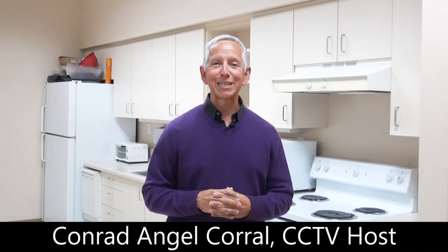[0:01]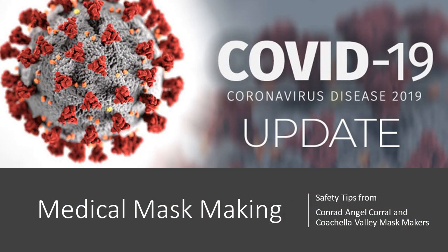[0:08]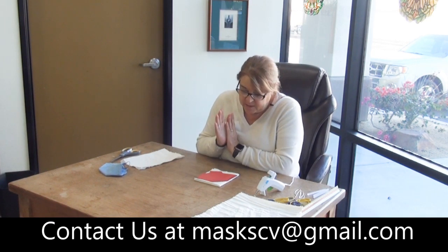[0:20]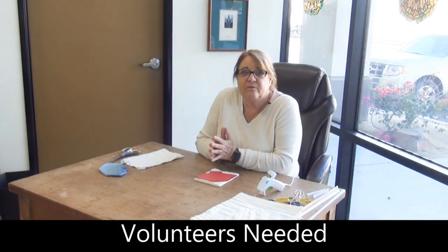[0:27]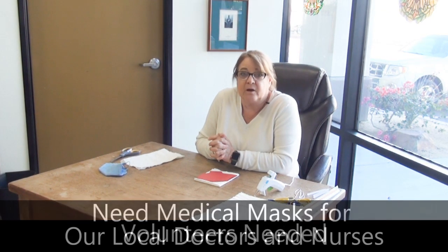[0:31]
Here is an informative video on how you can make a medical mask for our local doctors and nurses. Hi, my name is Shelley. I'm with the Coachella Valley Mask Makers. I am going to show you how to make a disposable medical mask in about 15 minutes. And then we will be looking for volunteers to help us make these from home. And these are for our frontline hospital staff.
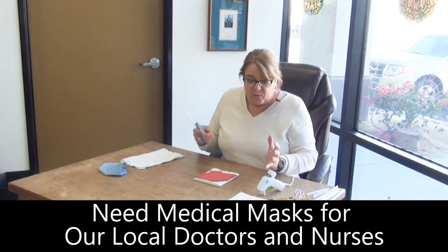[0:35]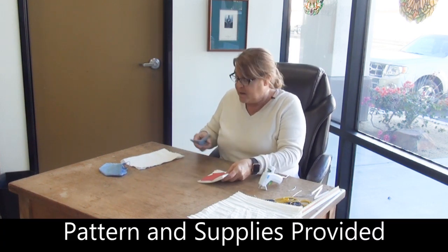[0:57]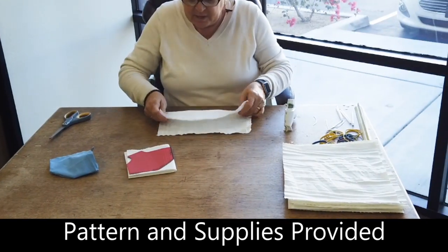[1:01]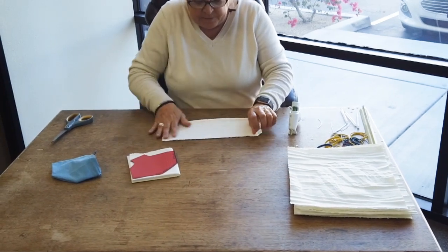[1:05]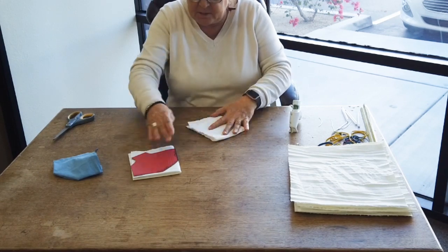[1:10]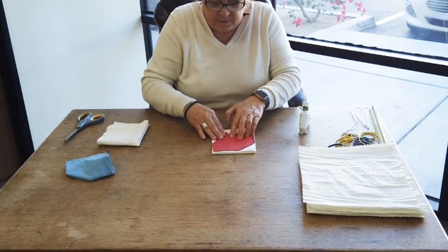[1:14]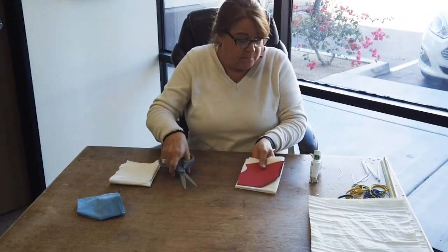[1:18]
So what you need to get started is a pair of scissors, a glue gun and glue sticks, rubber bands, a wire for the nose, and we are using these industrial towels. So a pattern as well. Here is the pattern. I have taken one of these industrial towels and I have folded it in fourths, making it 4-ply, and it's just enough fabric to stick this pattern on. We will supply the pattern as well.
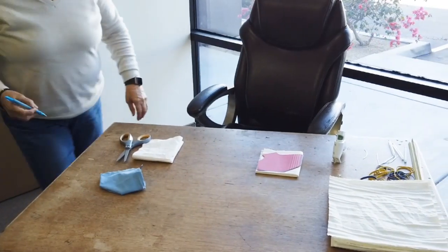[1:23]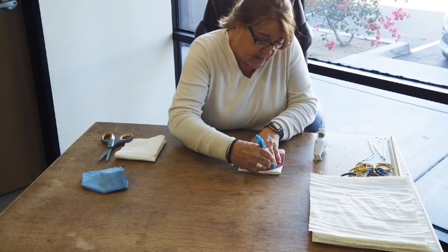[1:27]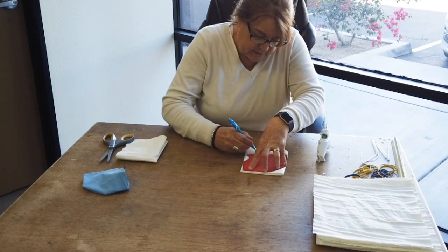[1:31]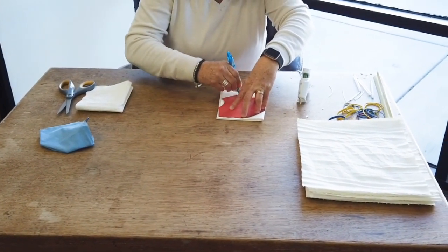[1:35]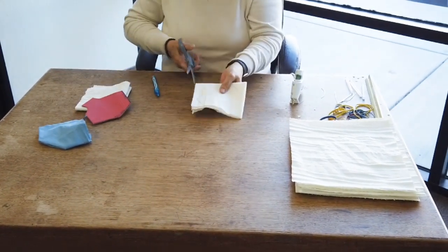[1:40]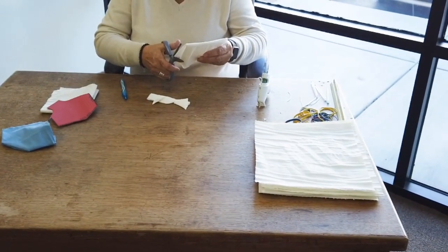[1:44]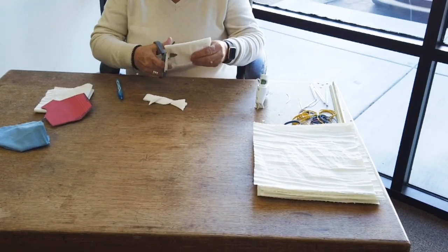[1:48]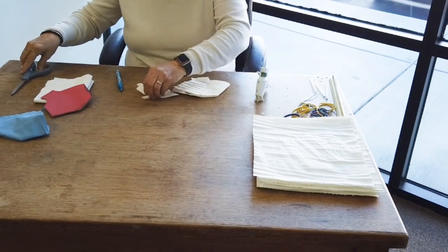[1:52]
So I can mark around, or my pen, mark around the pattern. It's easier to do it that way. And this is something that gets easier as you do it and quicker. I think it's something anyone can do. Great thing to get the kids involved in. Good community project, right? And art, craft, and community project.
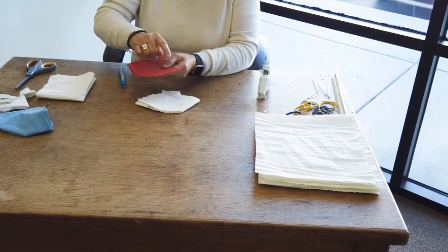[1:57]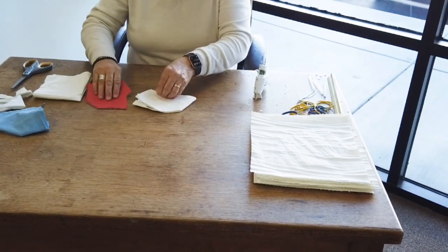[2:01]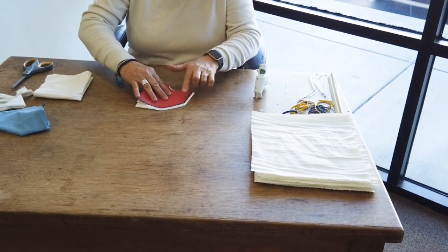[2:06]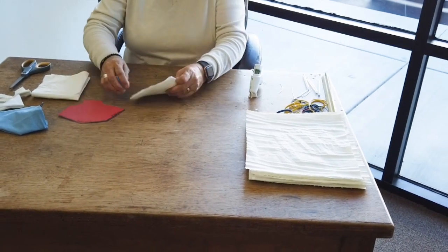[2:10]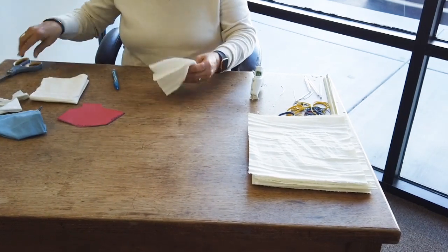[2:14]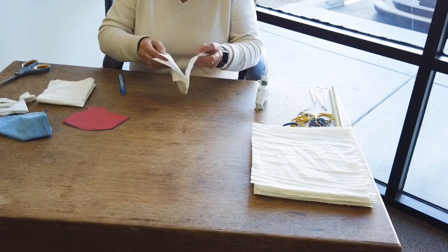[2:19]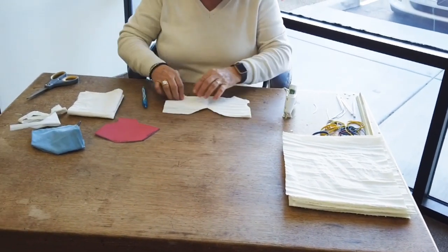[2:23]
One part I forgot to talk about here is on the pattern, there's a spot that says on fold. And what that means is like where the fabric was folded, that's where that has to go. All the rest is an open cut, but that one part is on the fold of the fabric. So now we've got the two pieces of the mask, one on top of the other. We open them up like this, one stacked on the other.
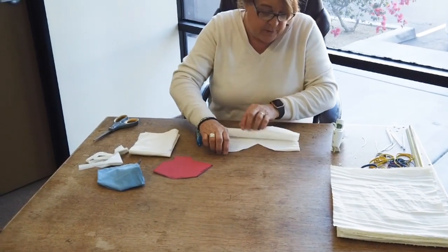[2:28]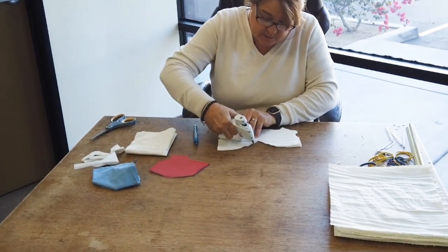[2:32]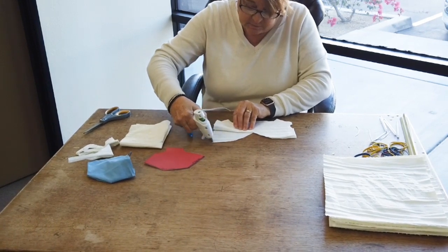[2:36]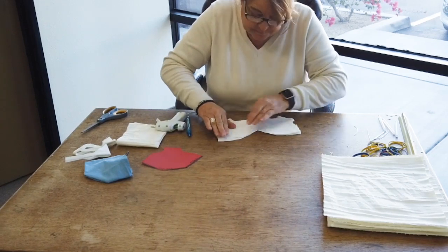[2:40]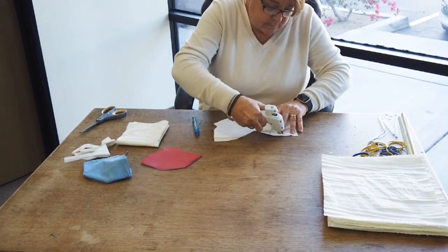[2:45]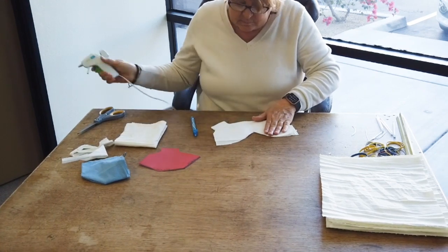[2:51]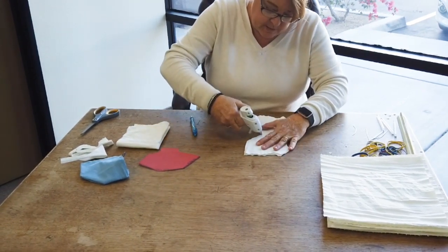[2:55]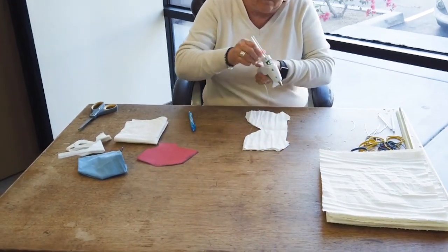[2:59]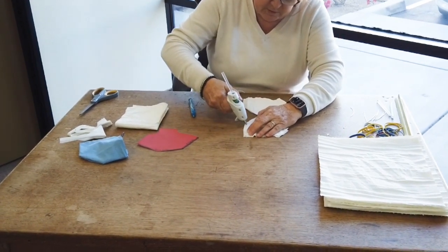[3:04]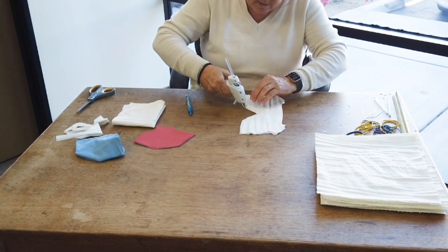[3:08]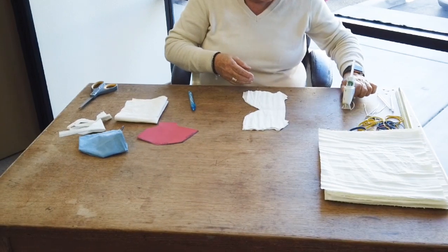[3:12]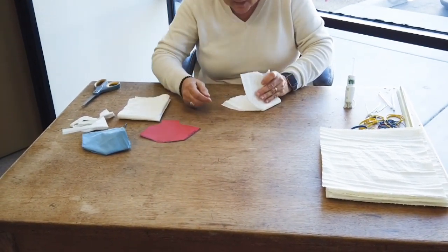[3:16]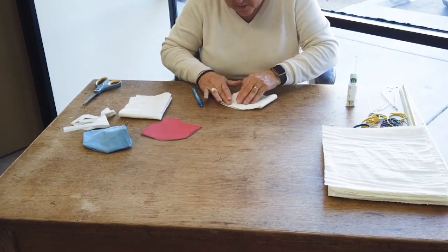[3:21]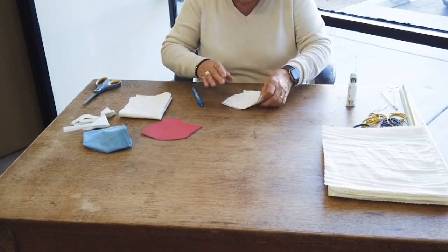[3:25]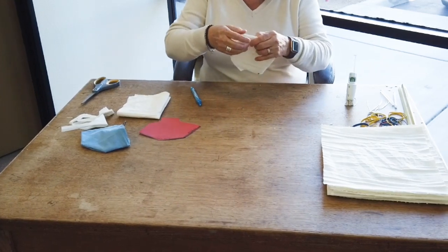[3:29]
We're gonna open it up and we're gonna give it a bead of glue just along the top here. Same thing on both sides. From there, we're going to give it another bead of glue on the outside. After we've glued those two pieces together on the inside, we'll hit the outside here. Fold it back over to how the pattern was cut. Line it up and have our seal. Just like that. I'll let that dry for a second.
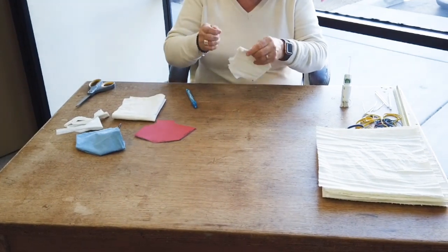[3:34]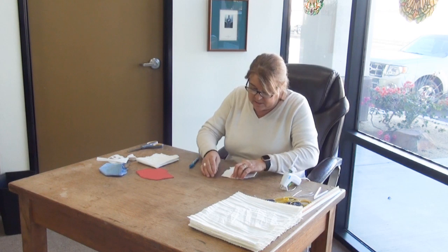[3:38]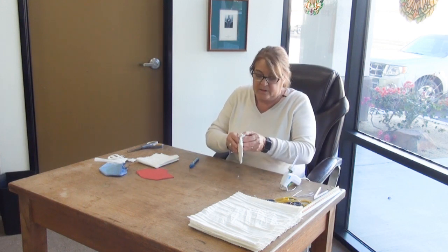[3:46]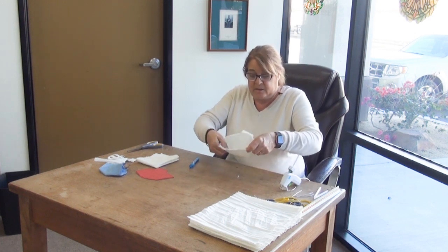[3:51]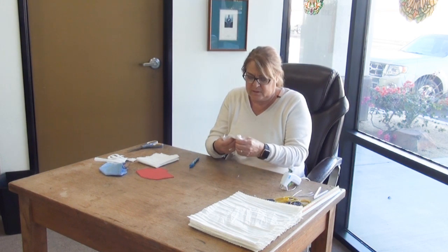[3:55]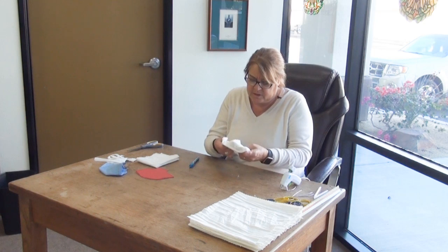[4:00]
Hot glue gets a little sticky. You try not to get too much on to be clumpy and messy. Again, that's an art you'll figure out after you do a few. So I'm going to take this now that we've got that, kind of let it dry for that little bit of time, and turn it inside out. Now, of course, we want clean, sanitized hands prior to starting our masks. We will sanitize them at the other end as well. Other end meaning when we drop them off.
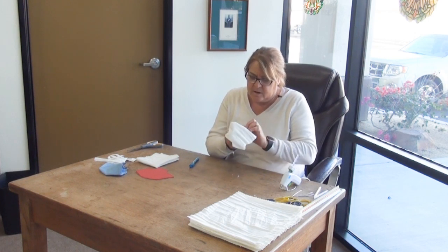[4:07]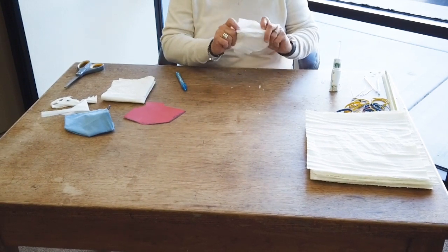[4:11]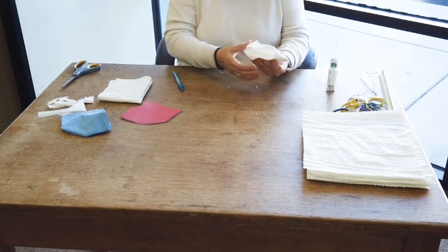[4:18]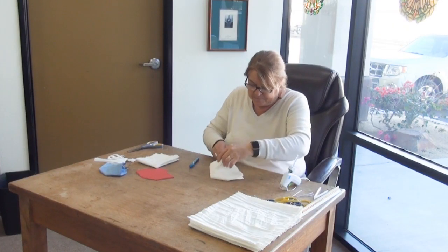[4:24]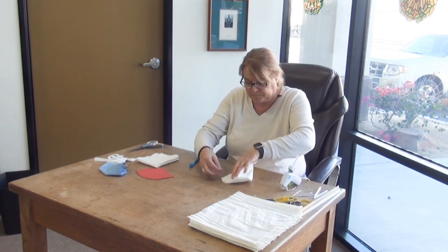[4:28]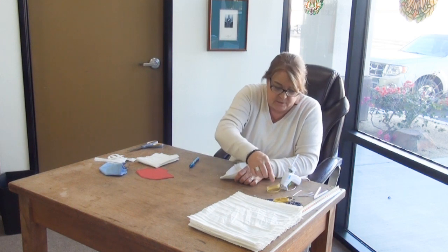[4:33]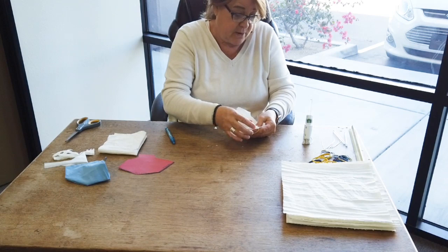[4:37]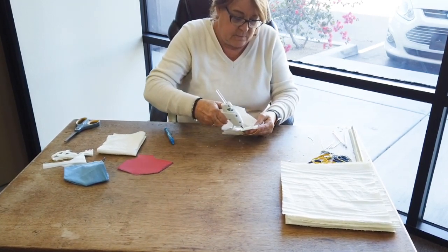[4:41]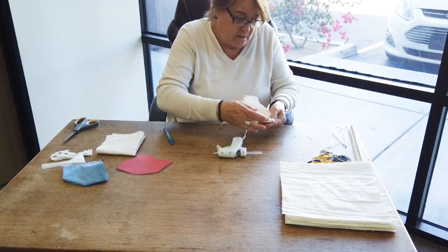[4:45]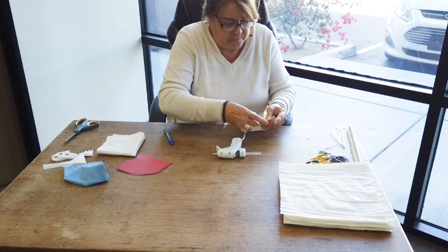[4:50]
Okay, so we press this out, and here's where you're going to press, and you're going to find out if you've got any broken seam. I've got a pretty good glue seam there. It's holding. So essentially, this is our mask. A few finishing touches. We're going to take some rubber bands and let's see, I want this one. And we're just going to slide it on that little tab right there. Give a good amount of glue. Flip that tab down. And since we doubled it, we need to do it again.
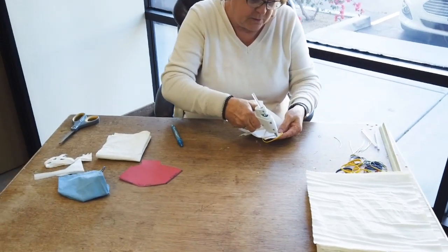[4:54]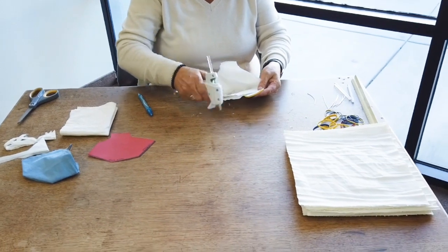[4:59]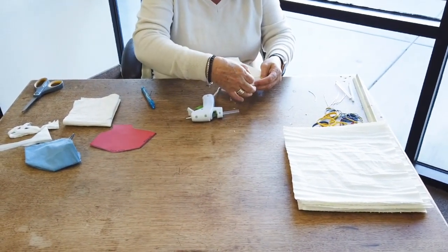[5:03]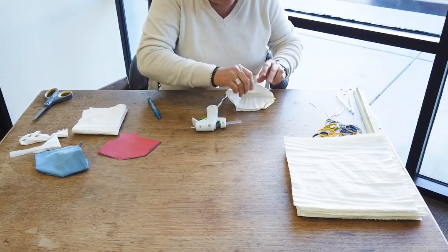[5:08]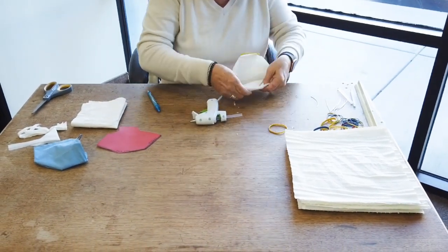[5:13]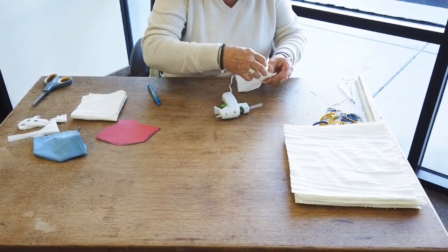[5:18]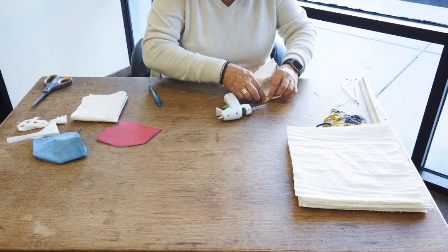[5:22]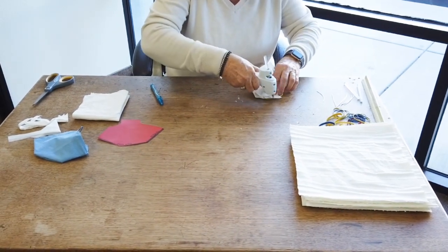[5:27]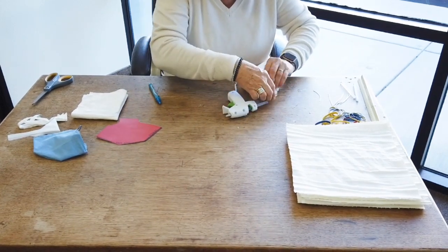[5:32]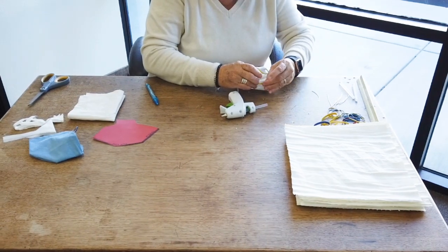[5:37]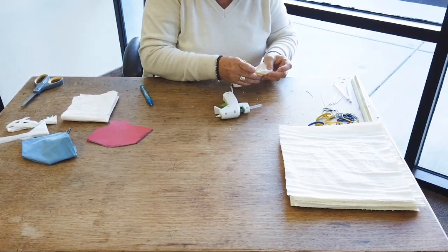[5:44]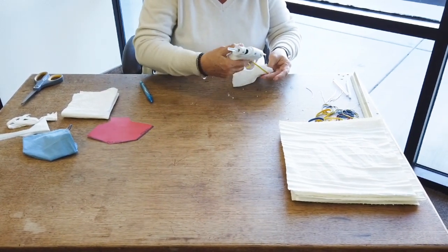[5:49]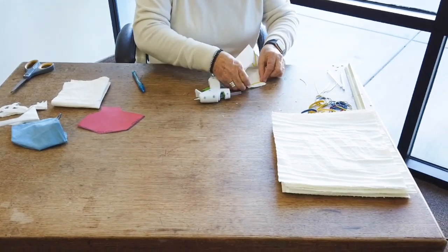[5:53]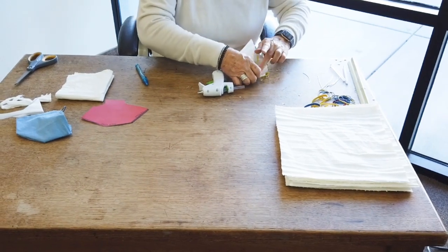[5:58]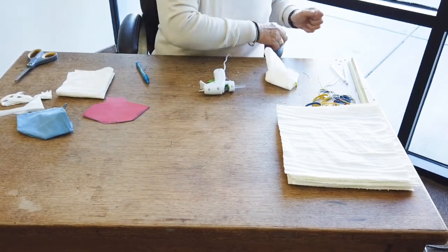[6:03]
We got one layer down. This part's important because this part's going to be resting on the ears and there's a little bit of tension on it. So we want to make sure that we got plenty of glue holding that strong. Press that down. Same thing on the other side. I always catch myself a little bit there. Same thing on the other side. Second earpiece. Did a little bit different this time. I glued those two together first. I'm going to come down with it again. Okay. Let that dry.
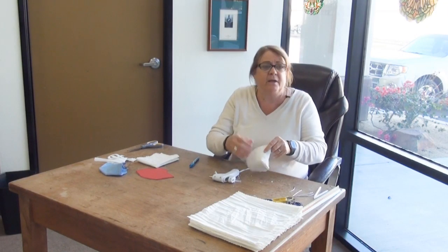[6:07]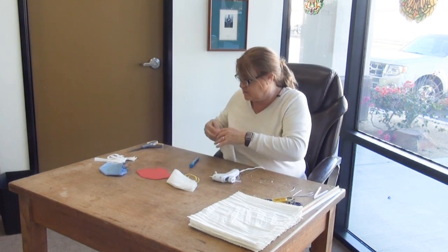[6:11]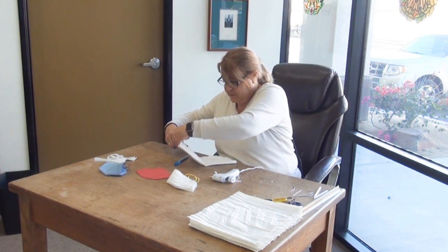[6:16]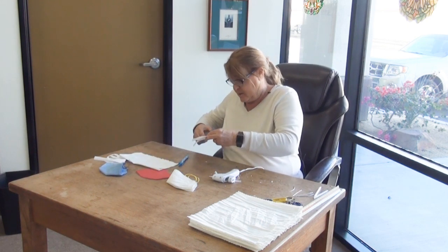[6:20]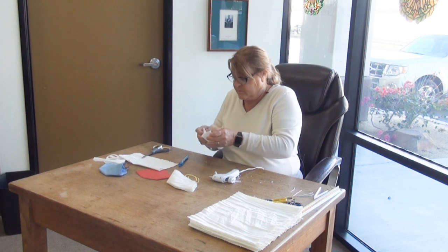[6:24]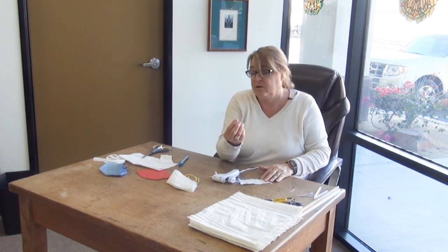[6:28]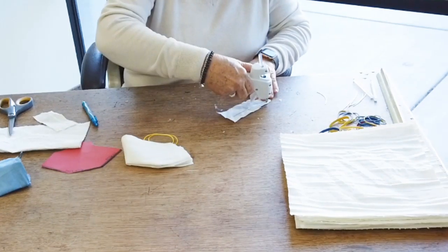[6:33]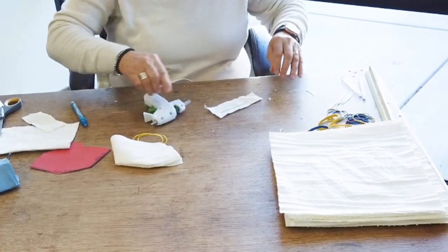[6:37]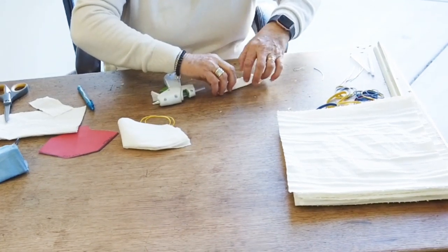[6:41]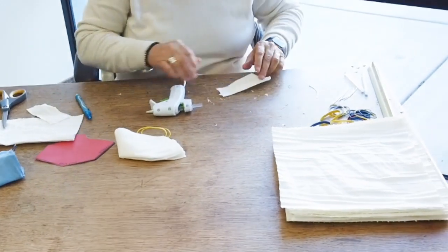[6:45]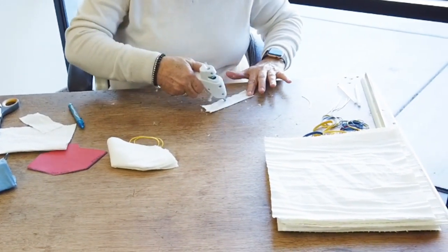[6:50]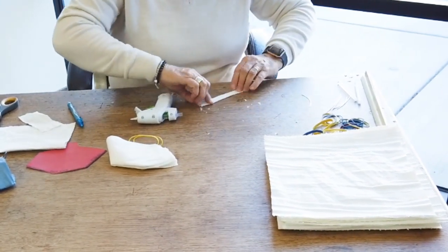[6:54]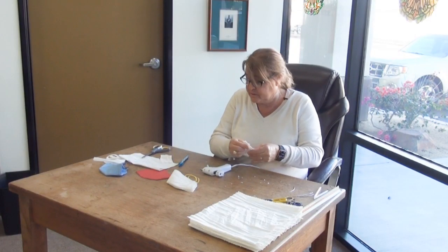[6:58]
And one final element we need to add is the wire that goes across the nose. This part takes the longest. Not difficult, but it takes a little bit more time than just folding it and tucking it in there, protecting that space. So I'm going to take a wire. This is just like a 20 gauge wire. I'm going to wrap it, like I want to get like 3 folds here in a piece of the industrial towel from the scrap. So if I can get 1 fold here, 1 fold there, and 1 fold here, presto. So just wrapped it 3 times in that.
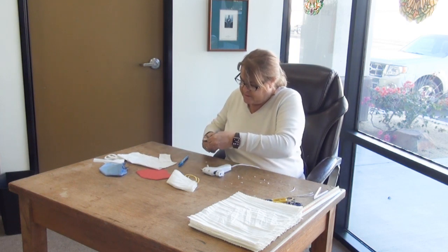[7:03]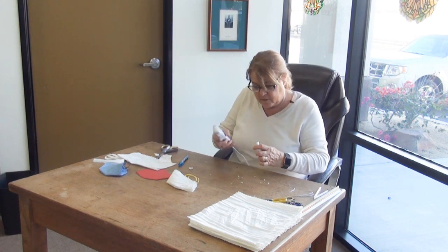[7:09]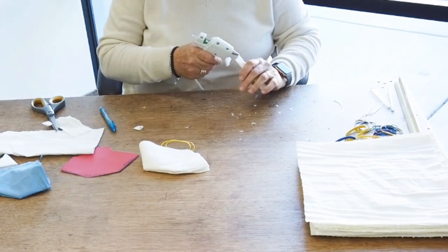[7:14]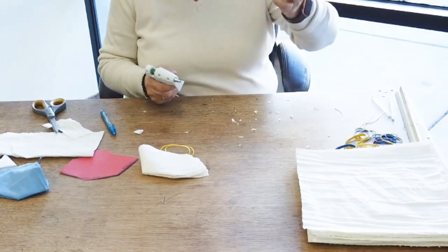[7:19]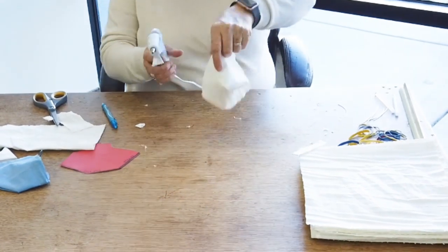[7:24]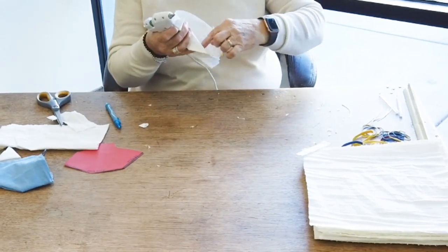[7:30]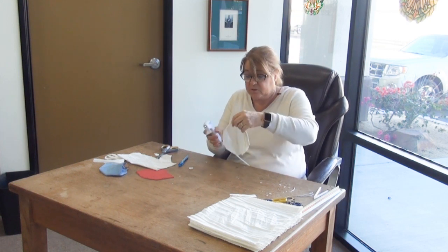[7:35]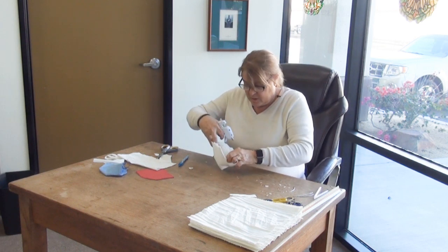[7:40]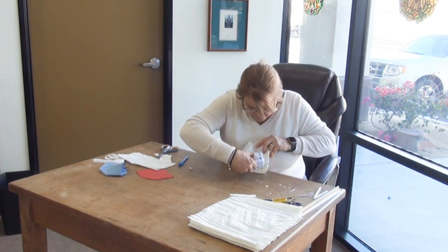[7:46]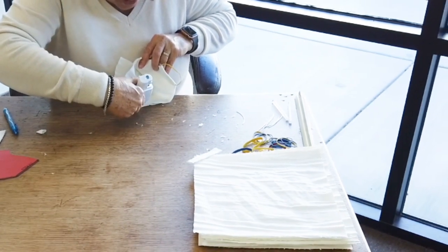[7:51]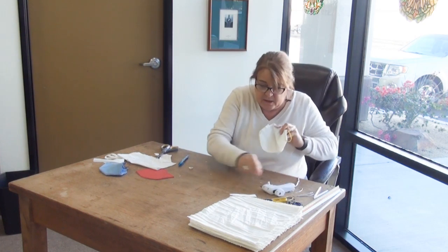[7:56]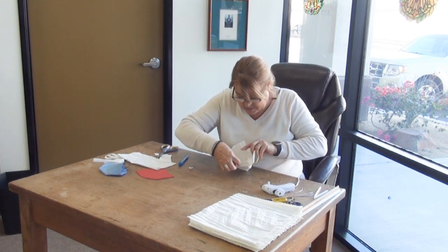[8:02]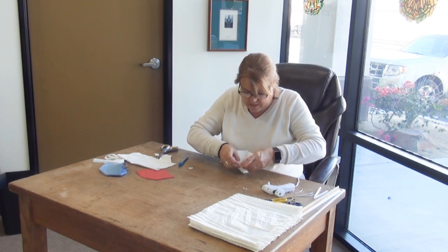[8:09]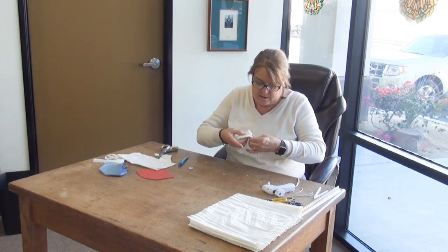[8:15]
I'm going to cut the ends a bit because I've got excess cloth there, and I'm going to glue the ends to make sure that wire does not come out. That would be very uncomfortable. So I'm going to glue this end, and I'm going to glue this end just to assure that that wire does not come out. Now I'm going to open the mask, and at the top where the folded part is, not where the seam is, the seam part, this will be on the lower part of the face. This part will be up on the bridge of the nose. So I'm going to put a bead of glue about 3 inches long across the top, trying to center it. About a quarter of an inch down from the top. You can see that. And then I'm just going to take this piece that was just made, center it as best I can onto the mask. Press, hold firm, and that's the mask.
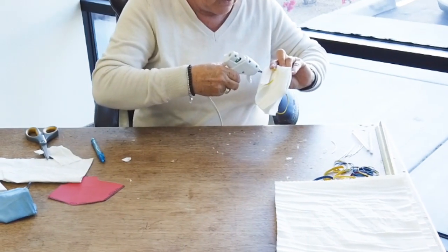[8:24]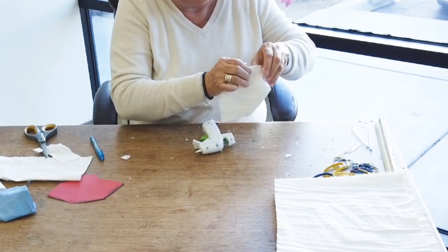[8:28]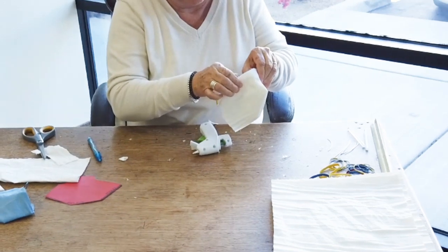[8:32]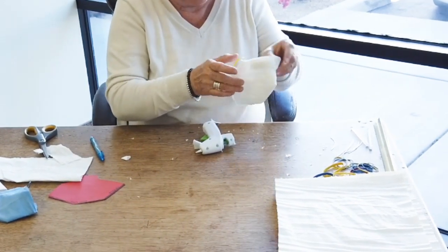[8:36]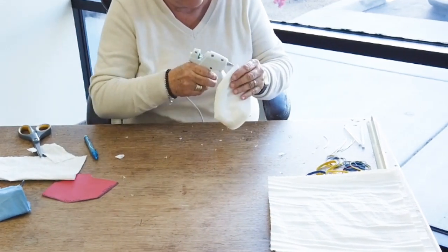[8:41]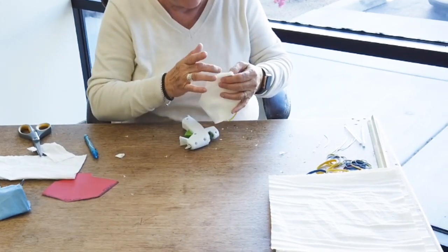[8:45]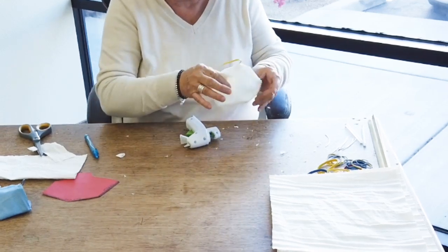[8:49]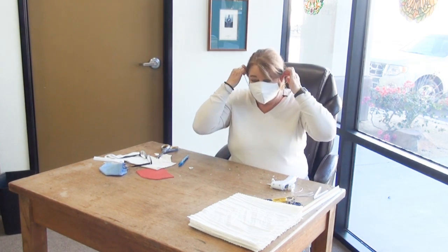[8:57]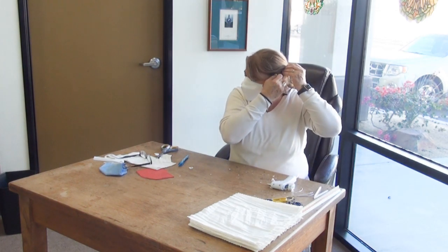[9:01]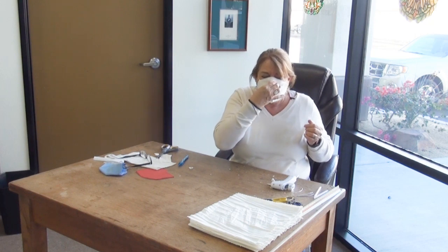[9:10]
We do have to go back and make sure our welds are nice and tight. Give it a little tension test everywhere. We don't have to worry about finishing the edges down here, up there. I do have a little bit of a loose spot here. I just want to hit with a little bit of glue. Good as new. And voila, we have our mask all ready to go with the nose wire. So we'll just slip it on, put it behind our ears. So nice long fit down here, nice and snug. And then you just squeeze right here across the nose bridge, and that wire adheres it to the face.
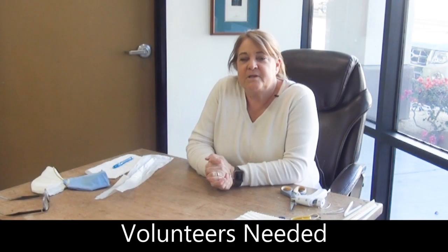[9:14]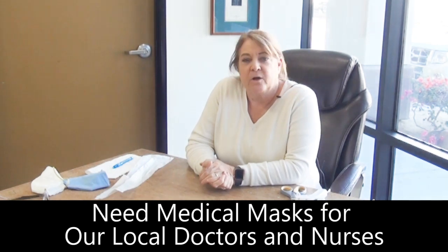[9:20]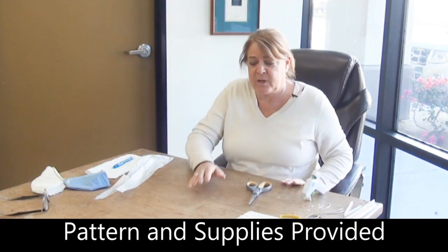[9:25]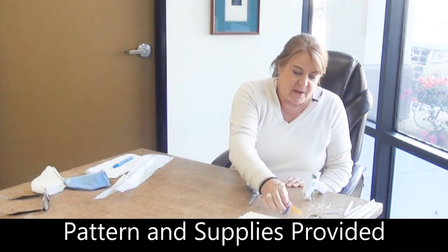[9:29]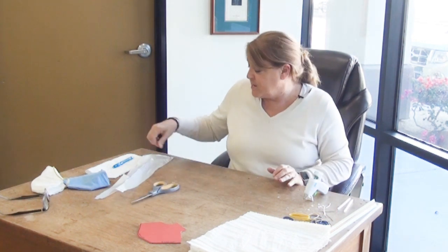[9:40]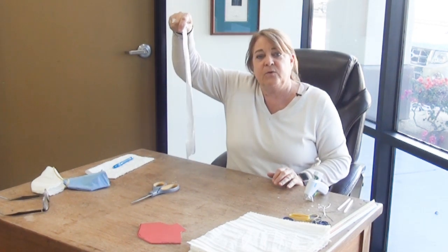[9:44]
If you are interested in helping make masks for our frontline medical personnel, we would love your help from home while you isolate. We will supply the pattern, the cloth, the rubber bands, the glue sticks, and if you need a glue gun, we will supply a glue gun, as well as the wires for the noses. So we will supply everything. We will have it packed up in bags that we will then drop off at your residence on your front porch or wherever you dictate. And inside will be directions as well, and how to call us when the masks are done, and we can pick them up and drop off another bag of supplies to make more if you choose.
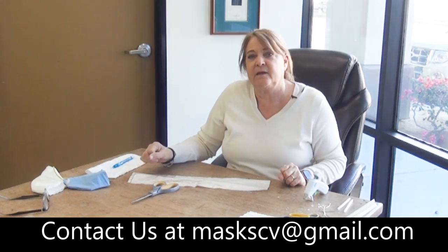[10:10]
That's it. We are hoping to get 200 volunteers that are willing to make 10 masks a day. So if that's you, please help us out. We need all the masks we can get.